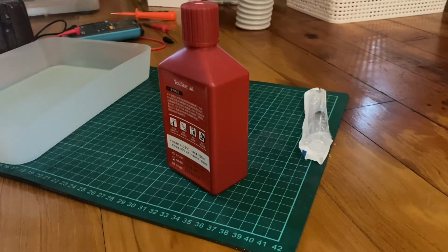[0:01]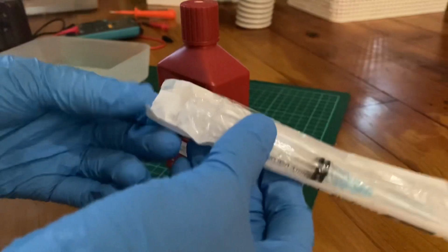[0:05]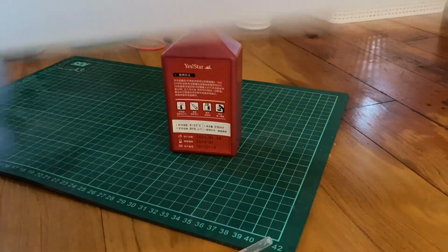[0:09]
I'm now preparing the monobath solution. So I'm going to use this. I think this is 3 cc's. I probably fill this with water because I'm going to have to clean the solution with water. I mean, clean the extra film.
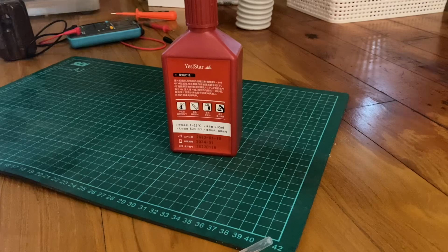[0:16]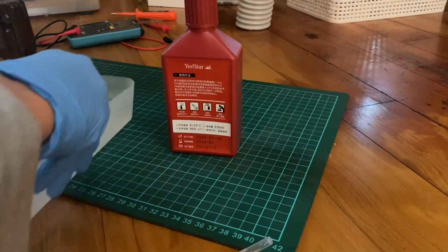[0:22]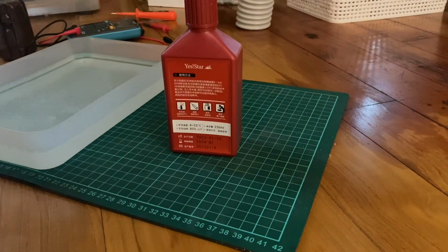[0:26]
Okay, so I have prepared some bath of distilled water. And I'm going to fill this up to 2 milliliters, I would say.
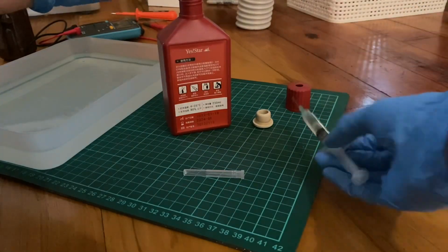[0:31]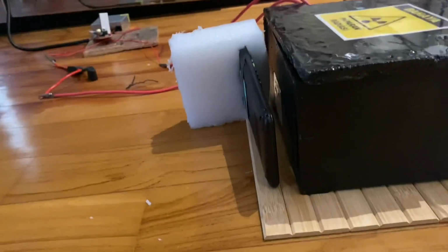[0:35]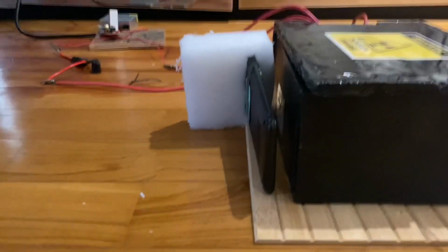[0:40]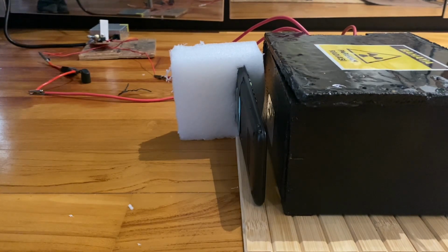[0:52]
Okay. We will x-ray the object. I don't really think we need a Geiger counter for this. We'll just back away, I guess. Is there any other precaution I should take? Oh yeah, where even is the remote? Let's power it up. Right is positive, left is negative.
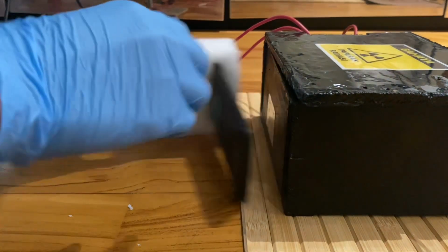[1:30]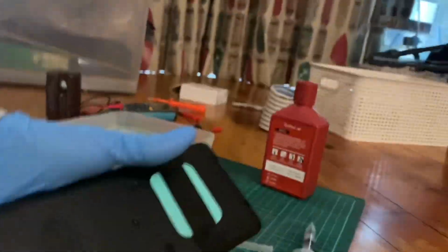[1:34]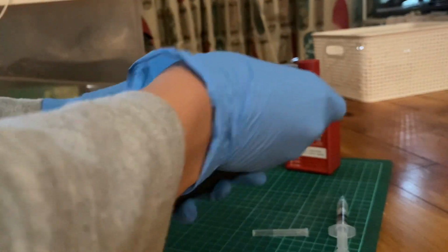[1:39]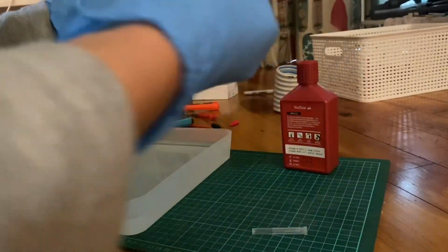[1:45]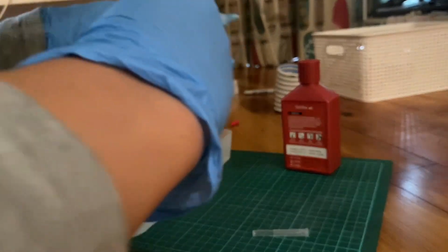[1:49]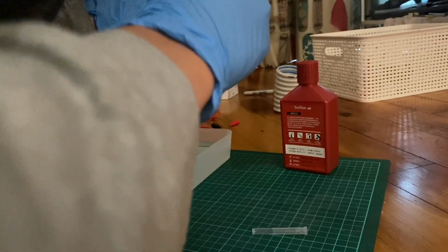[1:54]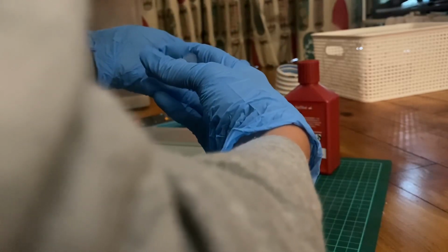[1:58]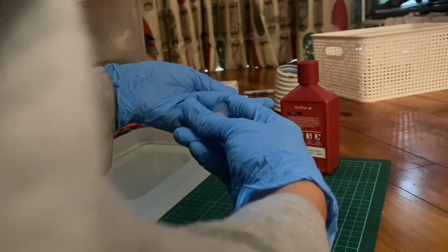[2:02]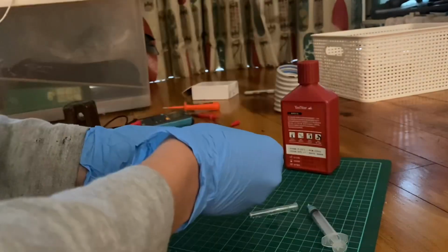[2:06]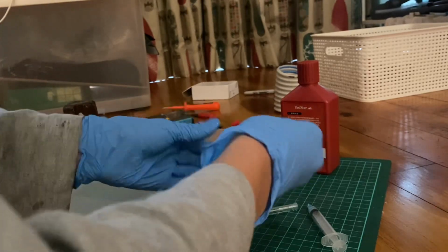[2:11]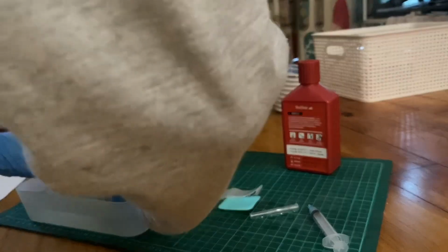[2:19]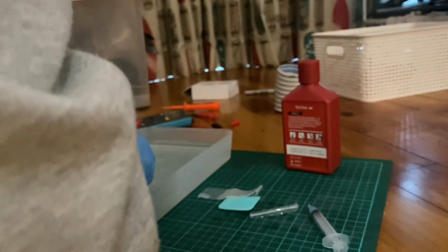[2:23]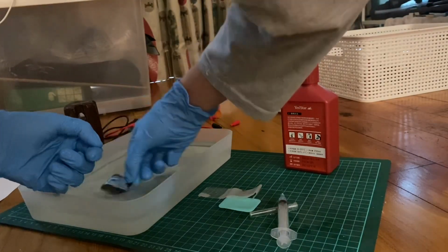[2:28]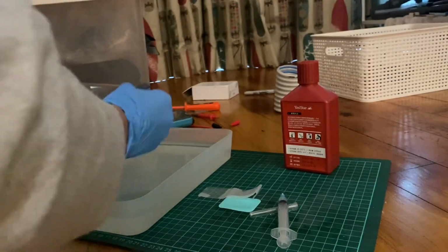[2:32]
Inject. Okay. So I'm just gonna push. Okay. Okay, I think it's good. So now I think I'll just leave it to dry.
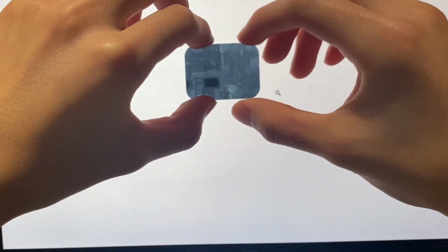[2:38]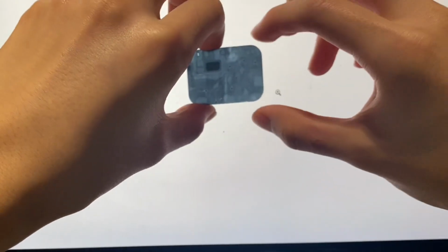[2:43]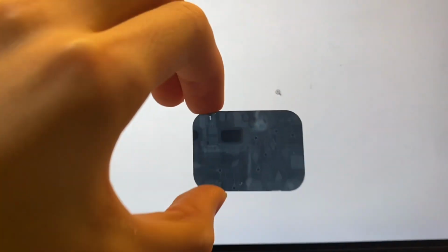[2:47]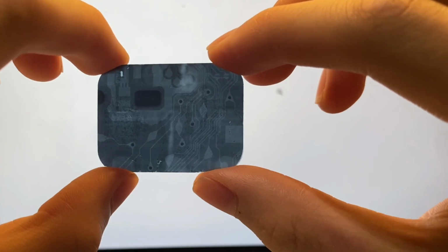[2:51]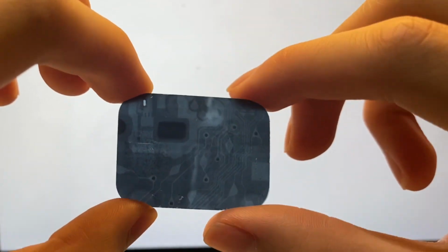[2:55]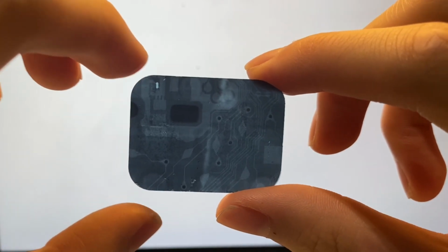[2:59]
So I finished drying the film for the most part, and I have to say, the results are actually very nice. I can see, I mean, maybe if I put more light, but I actually got the internals really nicely. You can see the traces. You can see, I think that's an IC. I'm not really sure. And yeah, it's really impressive. I'm really happy about the result.
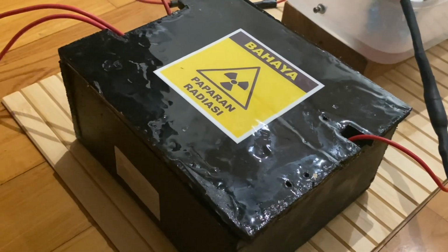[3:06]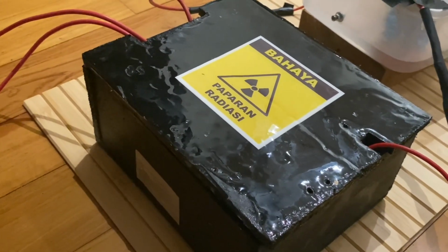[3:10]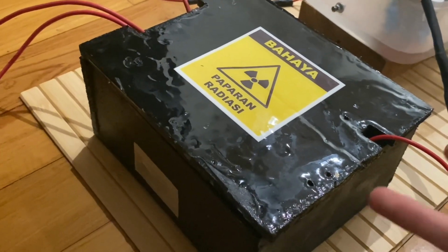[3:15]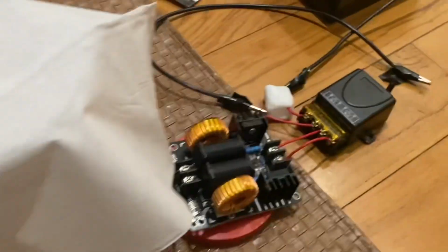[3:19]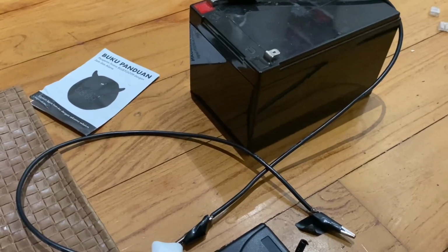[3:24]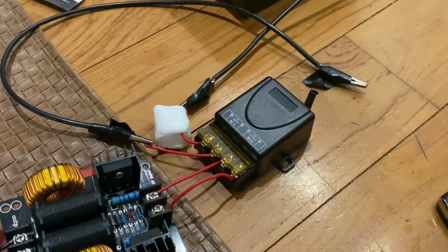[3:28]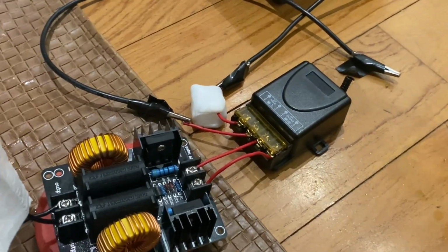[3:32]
An x-ray machine requires two things. I mean, actually three things. An x-ray tube, first of all, and a high voltage supply and a lower voltage supply. The high voltage supply, in my case, starts here with a lead acid battery. And this one is rated 12 volts and 12 amp hours. It goes to a relay, which is remote controlled, so I can operate the machine at a distance and limit my exposure to the x-ray radiation.
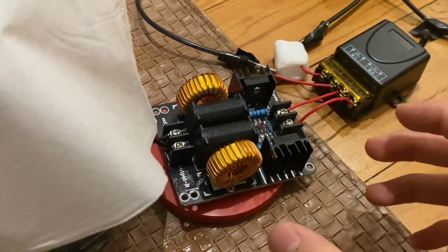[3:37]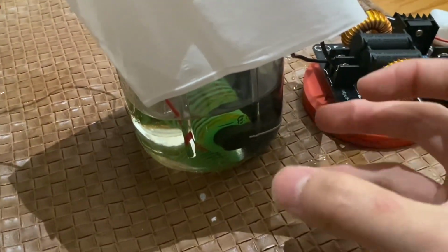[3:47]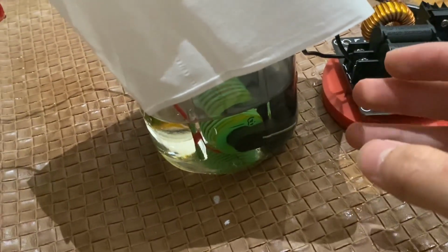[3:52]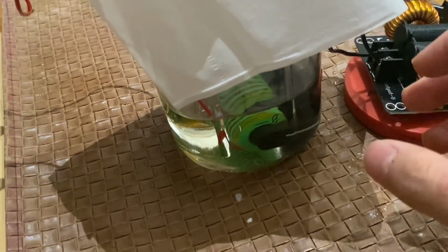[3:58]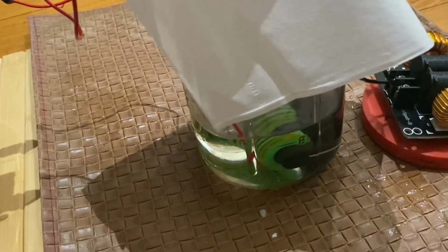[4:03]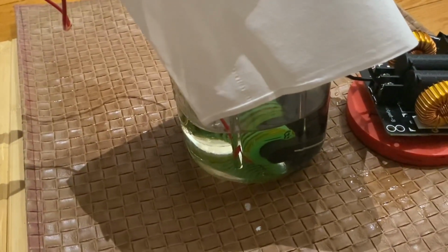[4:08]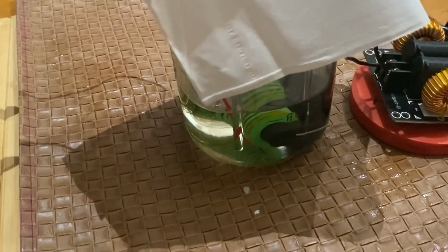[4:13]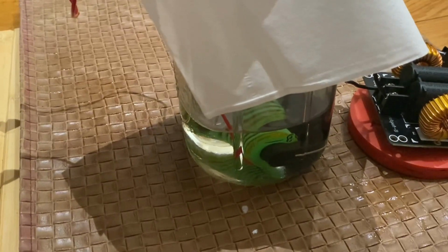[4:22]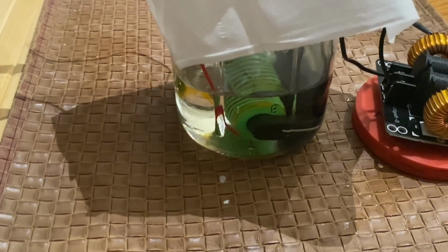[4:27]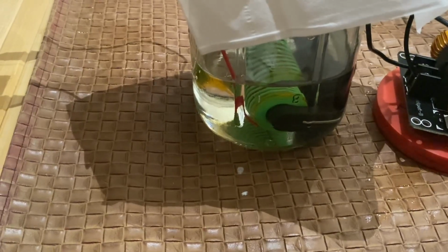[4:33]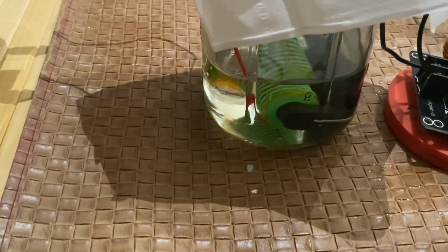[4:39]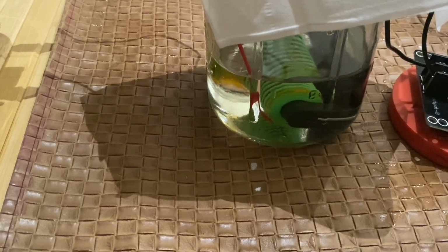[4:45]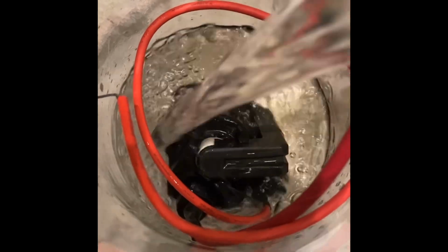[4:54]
Unfortunately, this only works if you have an AC. If you start off with AC, which is then rectified to DC through the multiplier. So in order to do this, you can't start with a regular flyback, because normal flybacks have an internal rectifier which rectifies the voltage to DC. Instead of trying to remove the rectifier, which would be much harder, I decided to dissolve the plastic casing using an acetone bath. I then replaced it with this 3D printed bobbin.
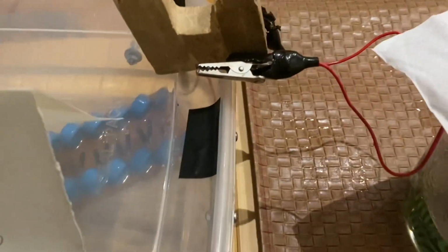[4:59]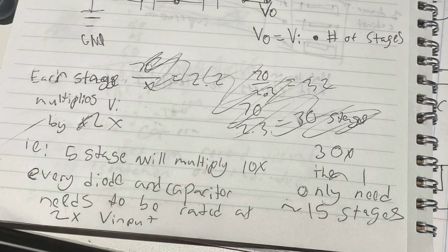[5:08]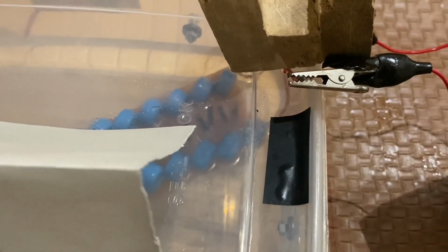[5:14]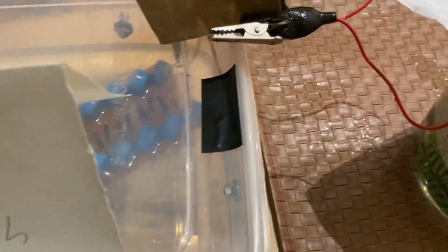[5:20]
Now this goes into the multiplier, which I calculated. I needed around 15 stages to multiply it, and I'm using these 20 kilovolt capacitors and 20 kilovolt diodes. I think you need around twice the rating of your transformer, but I'm not quite sure.
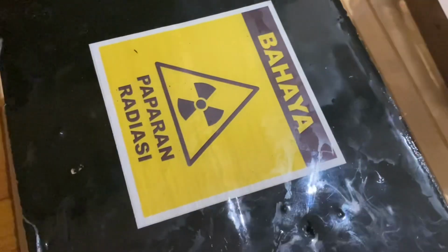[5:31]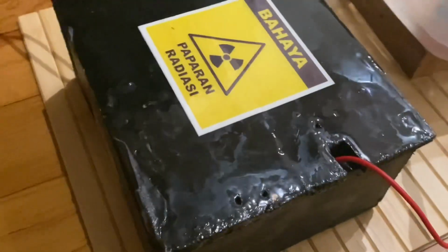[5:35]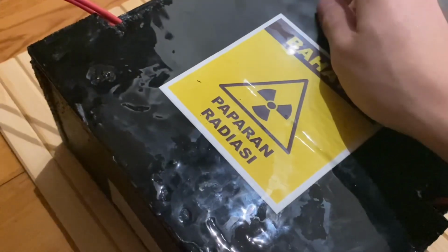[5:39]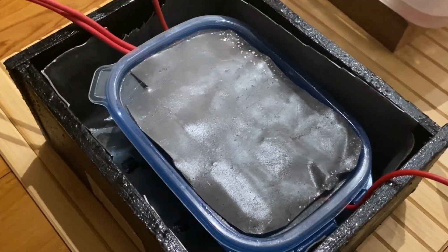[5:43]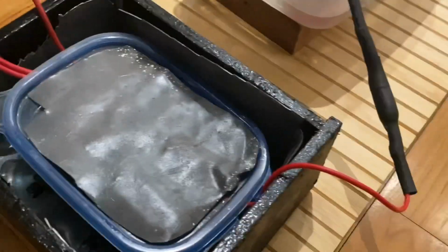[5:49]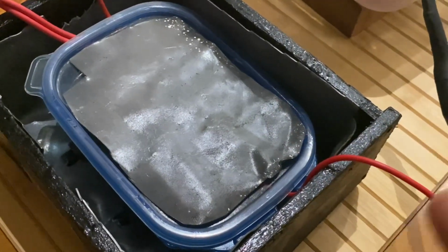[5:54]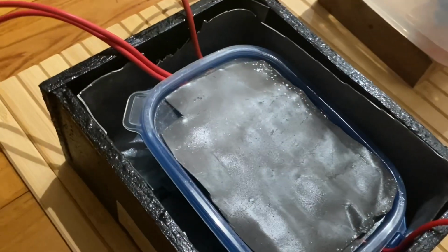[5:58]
This then goes to the X-ray box, or whatever, the enclosure, and it's all lead lined. I have the X-ray tube inside that Tupperware container. It's all filled with oil, and the positive of the high voltage goes to one end. The ground connects to one of the filament wires, and that's how you connect the system.
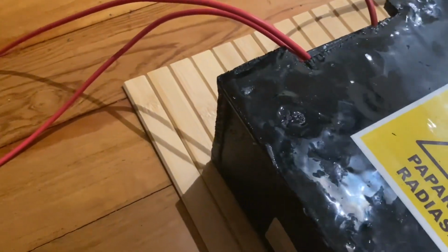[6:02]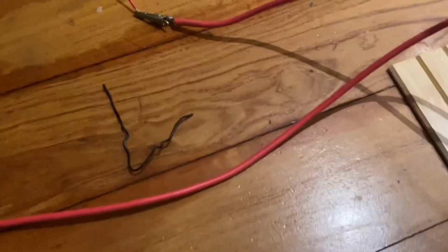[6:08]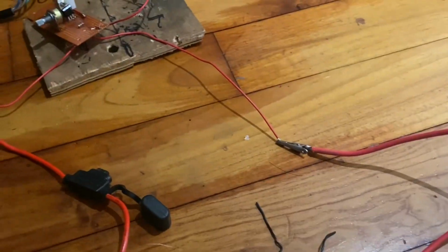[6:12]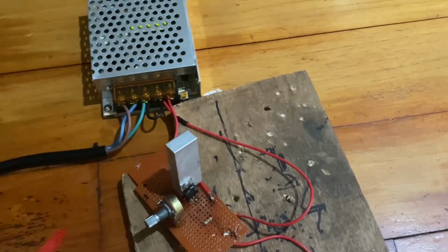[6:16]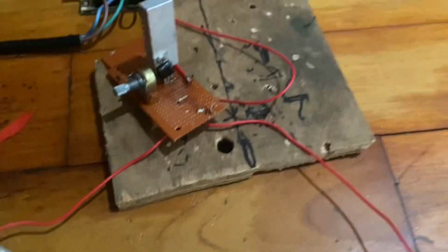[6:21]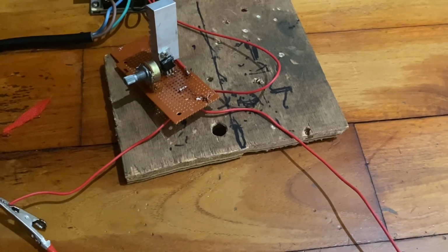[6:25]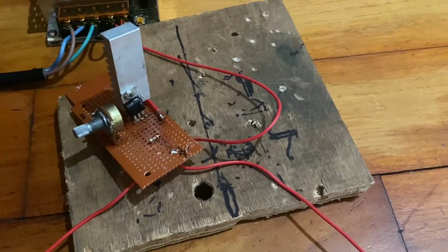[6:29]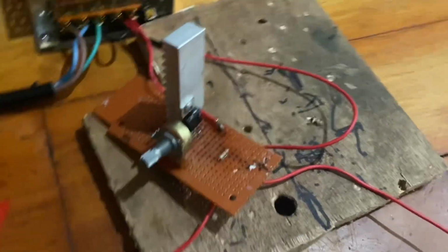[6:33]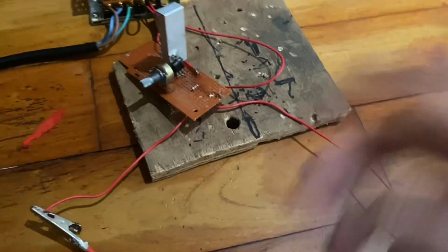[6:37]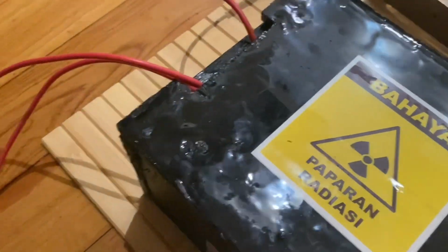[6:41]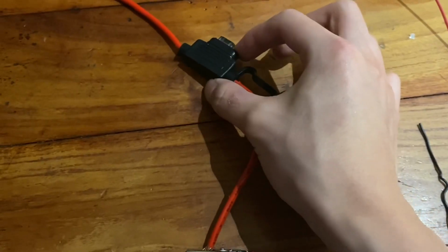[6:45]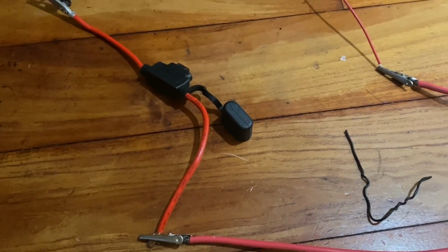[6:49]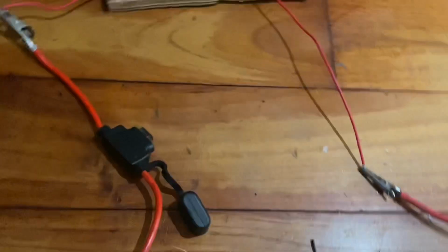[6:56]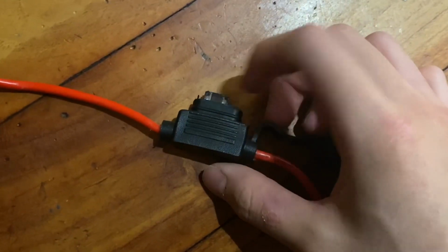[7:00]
And the low voltage supply consists of, I think it's a switching power supply for computers and such. And then that goes to a voltage regulator. This is an LM338 IC, and I have a heat sink there. Drive away the heat, I guess. And I'll show the circuit for this in more detail, but that just goes into the filament. I also have a fuse here in series, in order to stop it if it's drawing too much current or something; it'll burn out and stop it.
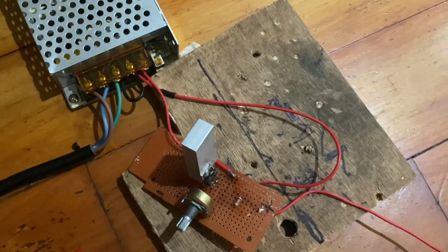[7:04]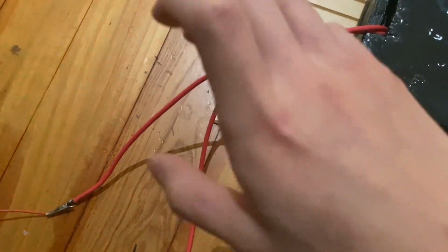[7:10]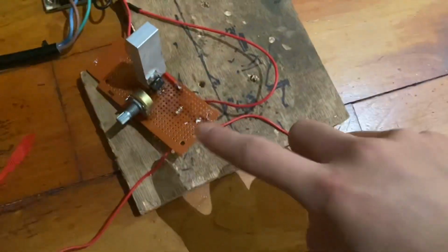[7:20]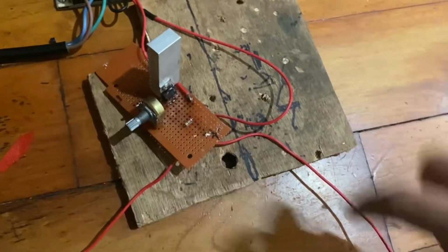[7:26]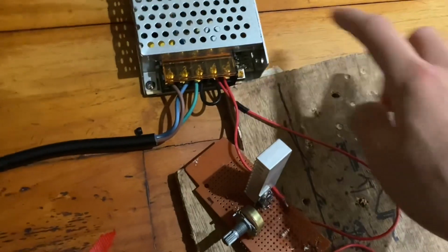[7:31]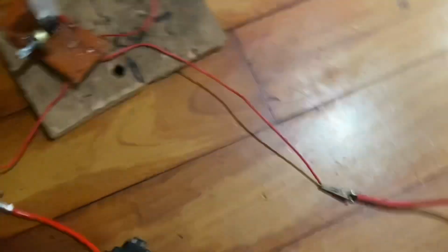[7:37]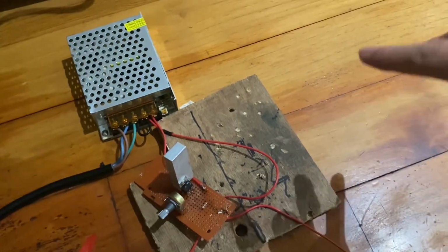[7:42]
The problem I was having for the longest time is how to ground the machine. I mean, I didn't ground it properly initially. So the way I've wired it is that the high voltage is connected to one of the filaments, and that filament is the negative of this regulator. And the regulator is then connected to the negative of the switching power supply. And that is connected to the ground of the mains outlet. So no potential difference can be created, and it will not destroy the system, which happened twice when I did not ground the system.
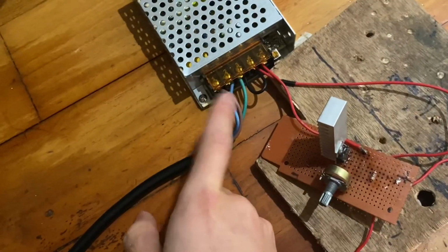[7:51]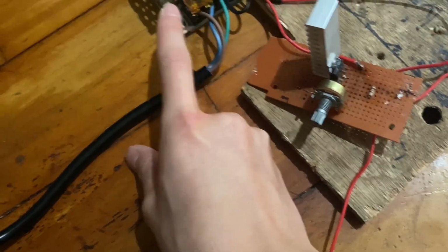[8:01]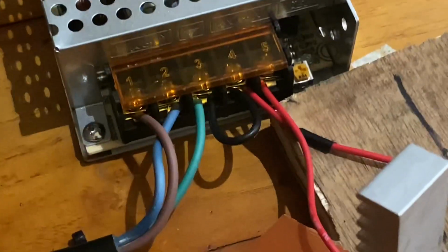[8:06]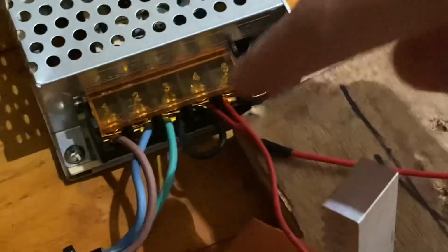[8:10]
So if you want to do it like me, you need the mains cable with the three wires, and you need to search up the colors, but for me the green cable is ground, and I think brown is live and blue is neutral. So I'll just show it there. You need to connect your high voltage and low voltage negative to ground.
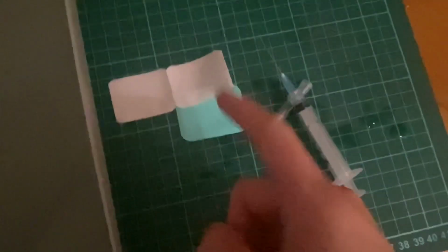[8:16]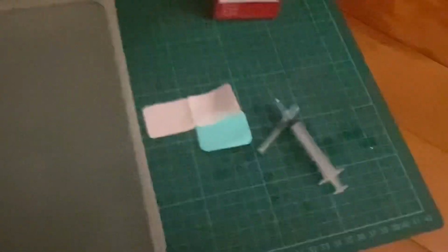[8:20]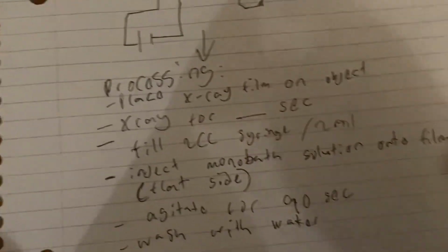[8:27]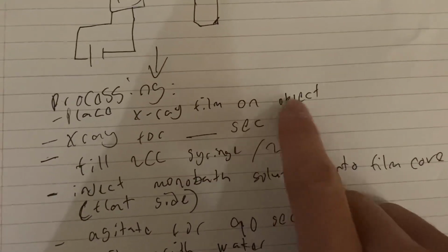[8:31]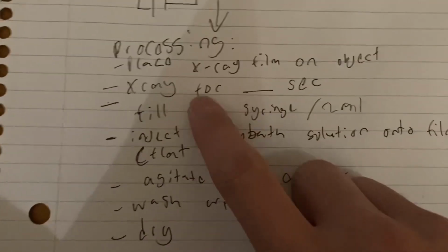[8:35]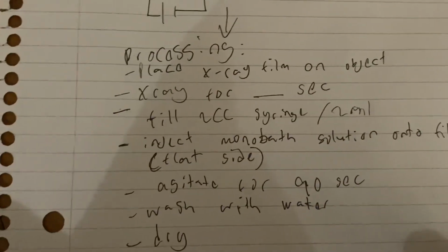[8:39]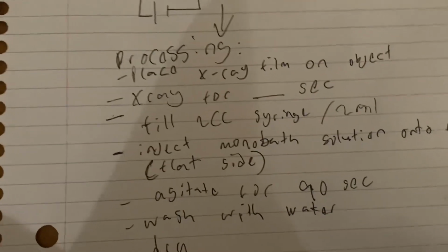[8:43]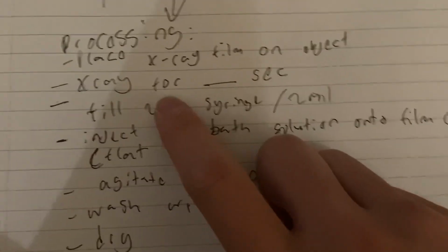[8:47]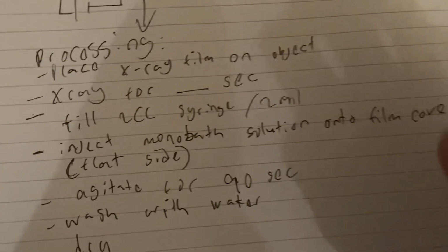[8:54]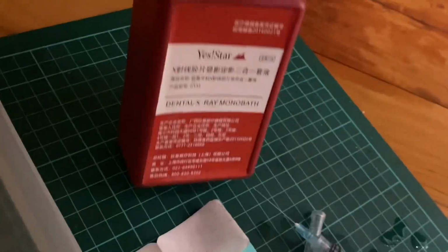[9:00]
So if you want to develop your own X-ray films, you need to buy these. I'll probably leave a link or the name of it in the description, but this is the process basically. So you need to place the X-ray film, tape it on the target that you want to X-ray. Then you X-ray for a set number of seconds. So for me, I think 10 or more seconds is good for developing my film. Then I fill my 2cc syringe. It's 3cc's, but I fill it to 2 milliliters of the monobath developer.
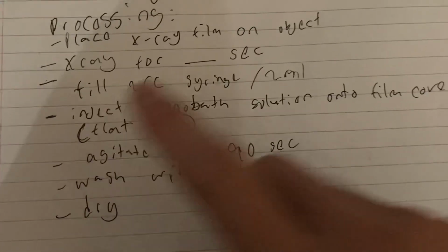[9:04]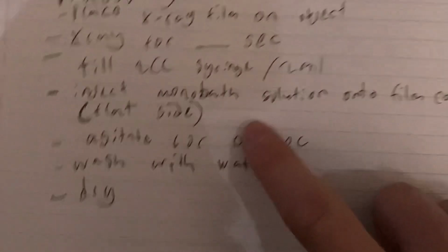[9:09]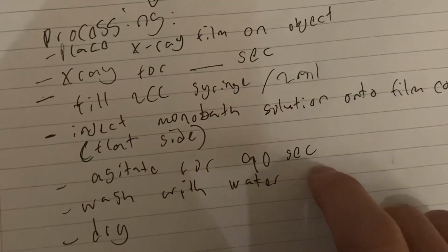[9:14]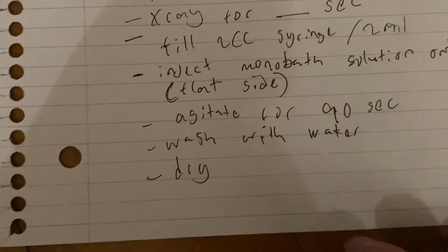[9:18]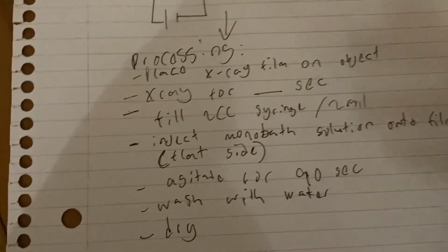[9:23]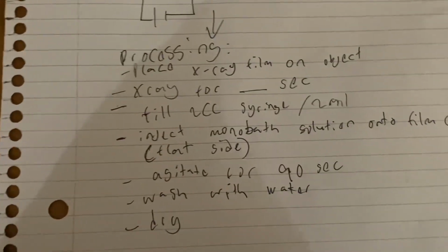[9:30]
I then inject the film after I've X-rayed it, and I agitate it for 90 seconds. I clean it with water, and I dry it using a blower. So you can just let it dry naturally, but if you want it quicker, you can dry using a blower or similar. And that's the process for developing your films.
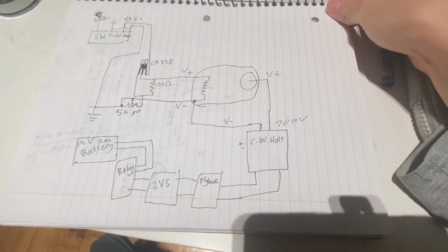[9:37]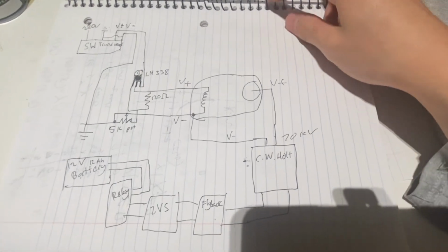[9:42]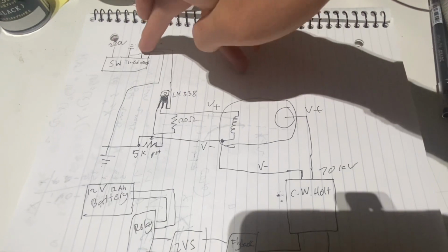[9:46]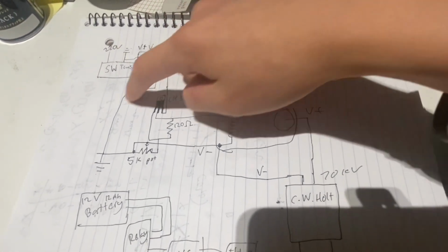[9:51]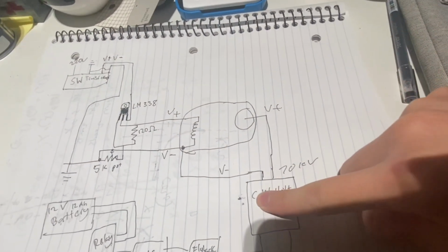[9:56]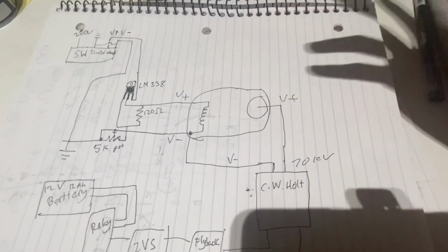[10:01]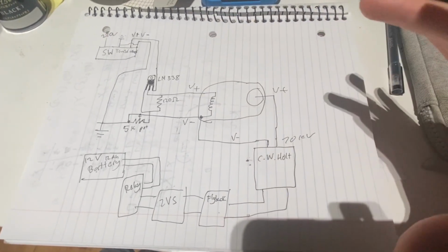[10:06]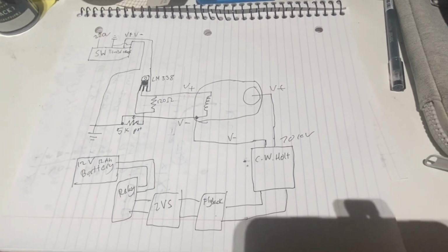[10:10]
So this is the circuit diagram. It's mainly what I said before. And the negative of the switching supply is connected to ground. That's grounded. That connects to the high voltage negative of the multiplier. And that's basically it. It's basically what I showed before. So you can screenshot this in case you want to build the system of your own.